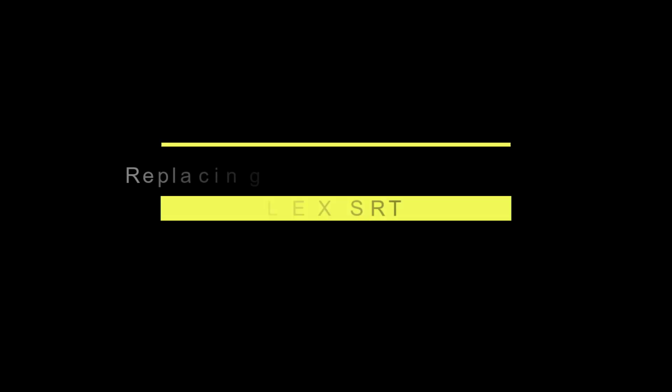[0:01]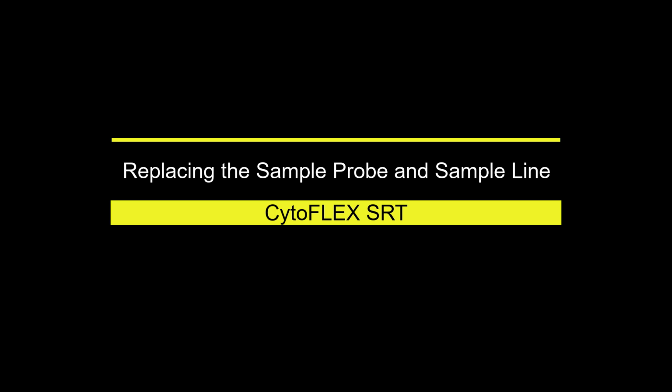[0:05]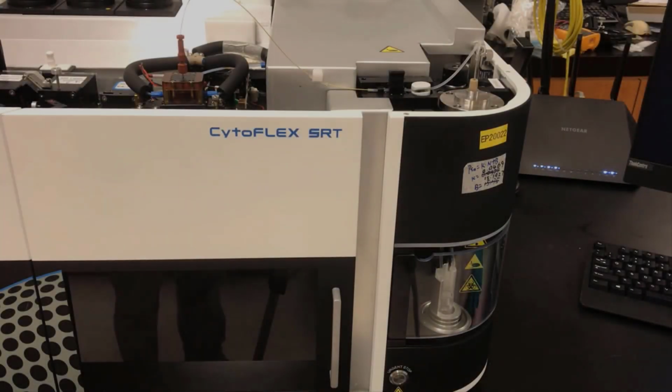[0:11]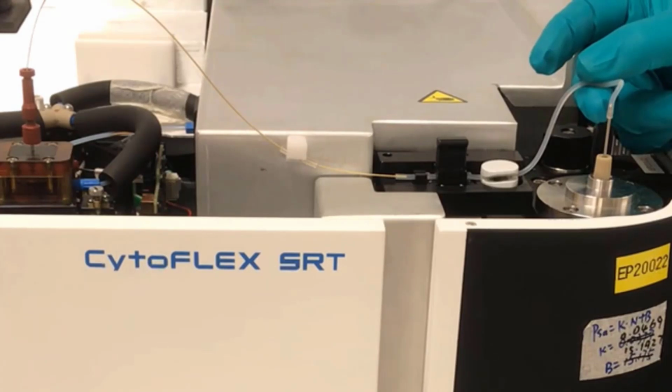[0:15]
This video will walk through replacing the sample probe and the sample line. The sample line has two sections. One section is silicone tubing. The other section is PEEK tubing, which is a hard tubing. The silicone tubing is soft. The soft tubing is used here because of the pinch valve that is used to open and close the sample flow to the flow cell.
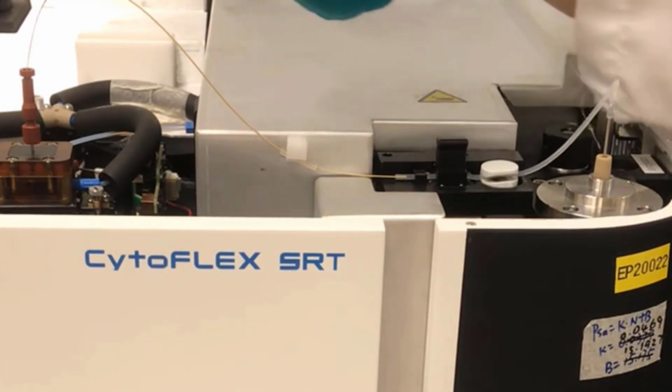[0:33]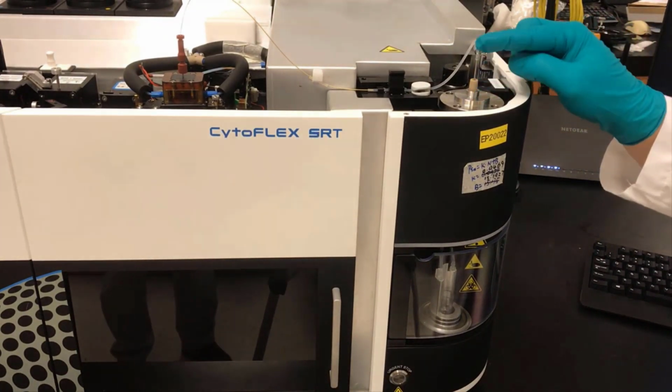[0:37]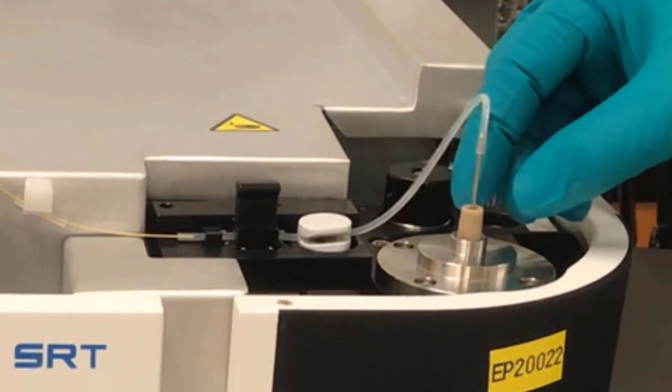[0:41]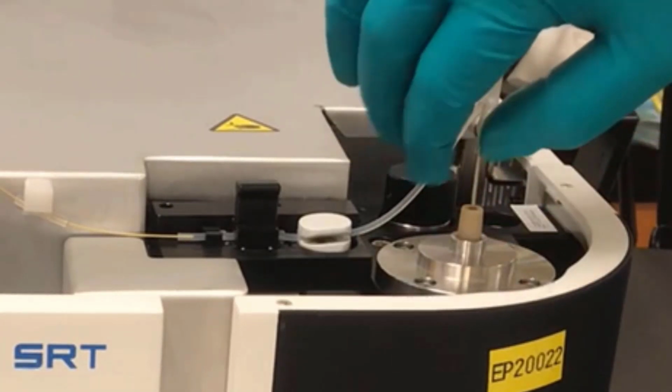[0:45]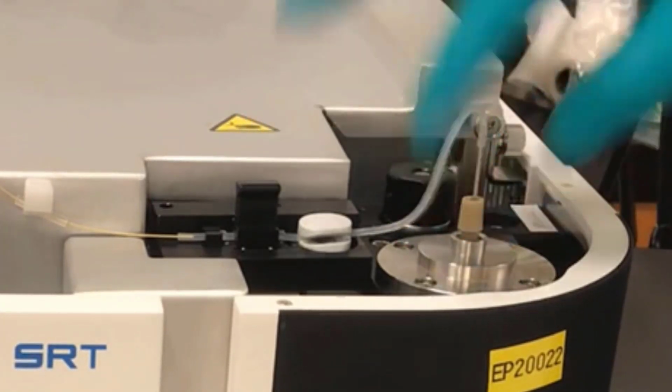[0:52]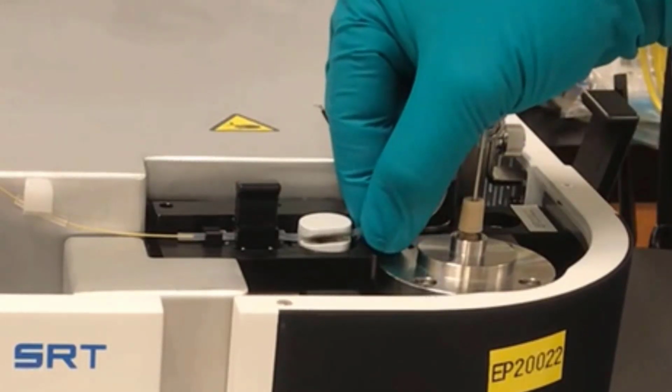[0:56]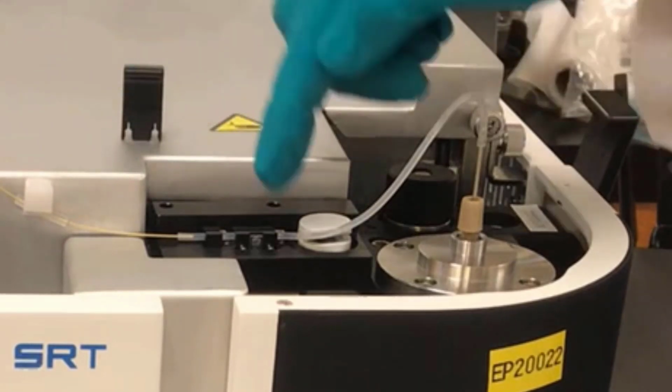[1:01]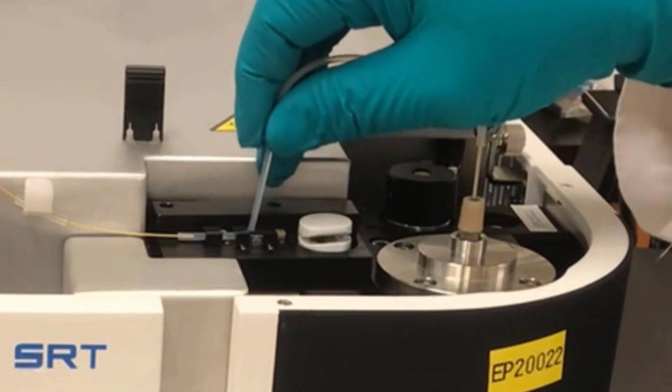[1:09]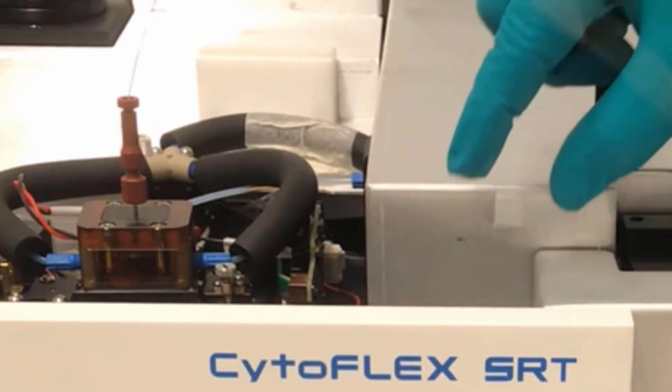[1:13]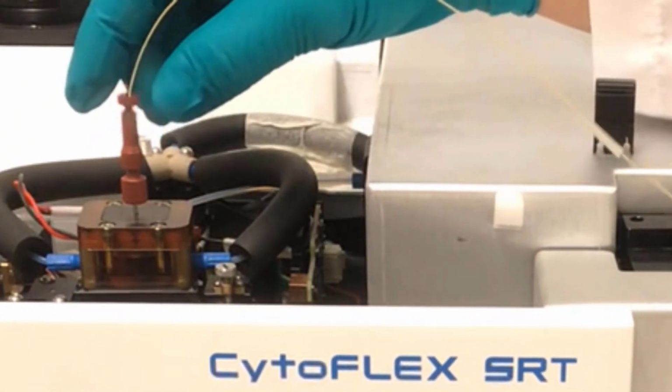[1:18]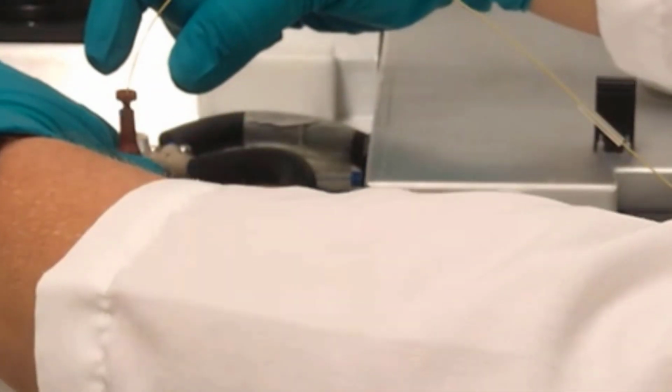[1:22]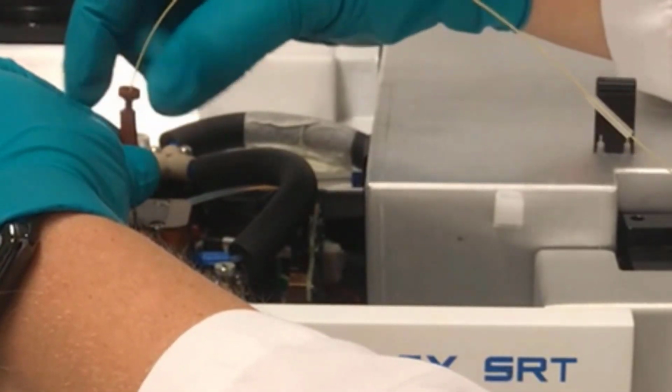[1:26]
Turn the gray finger tight fitting attached to the sample probe counterclockwise. Carefully pull the silicone tubing away from the sample line bubble detector and the pinch valve slot. Remove the sample line bubble detector cap. Hold the fitting adapter securely and turn the brown finger tight fitting counterclockwise to disconnect the PEEK tubing from the finger tight fitting adapter.
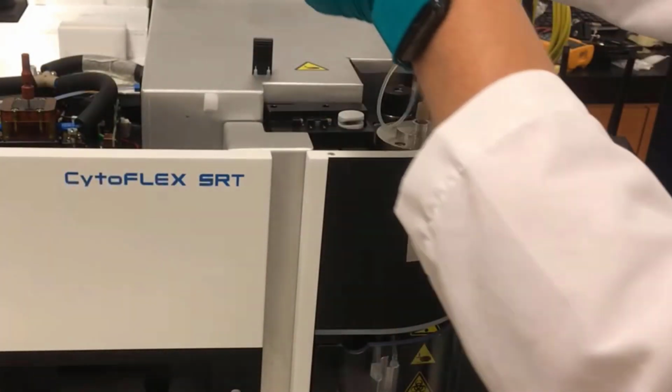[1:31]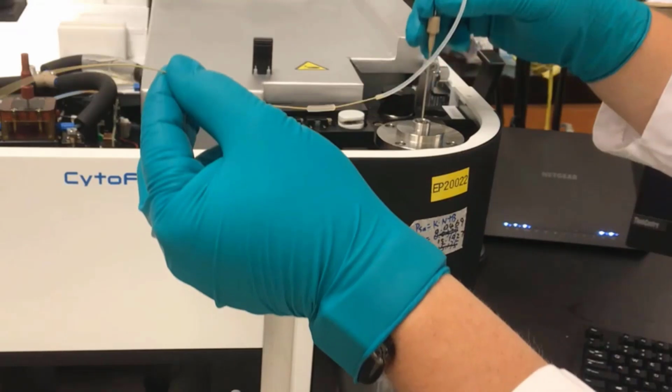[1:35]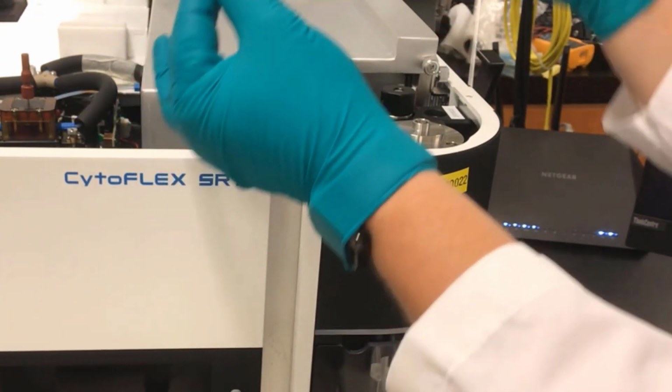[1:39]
Once the fittings and tubing are loose, you can now remove the sample probe. Slowly pull the sample probe upward until it is completely removed from the top plate. Go straight up and avoid bending the probe.
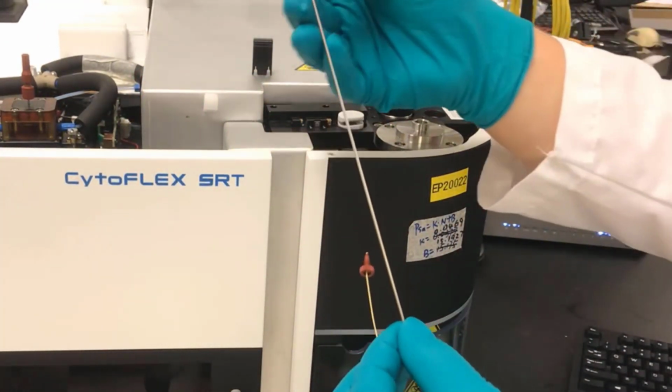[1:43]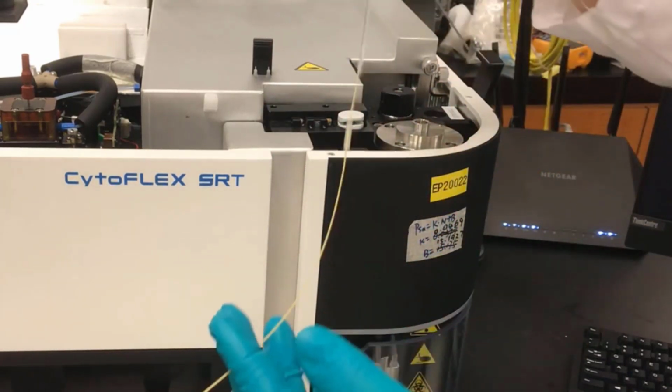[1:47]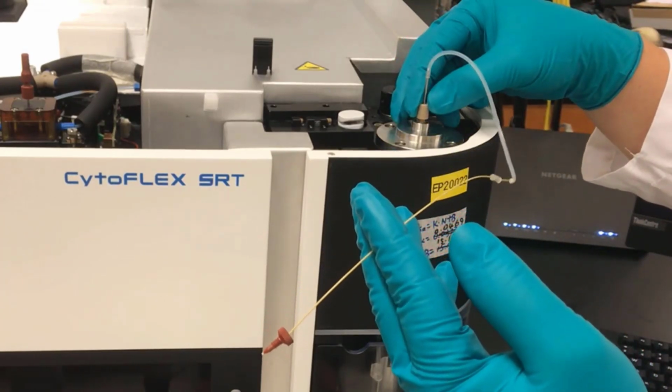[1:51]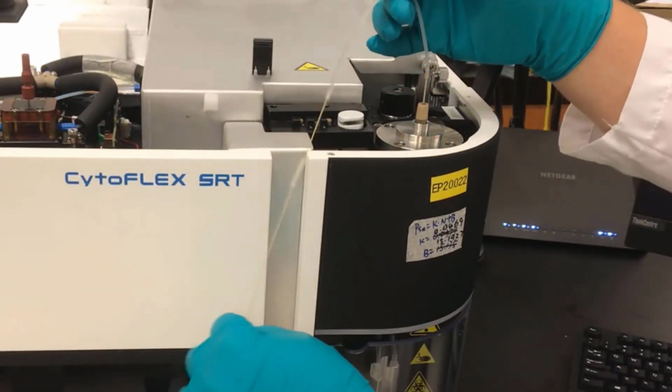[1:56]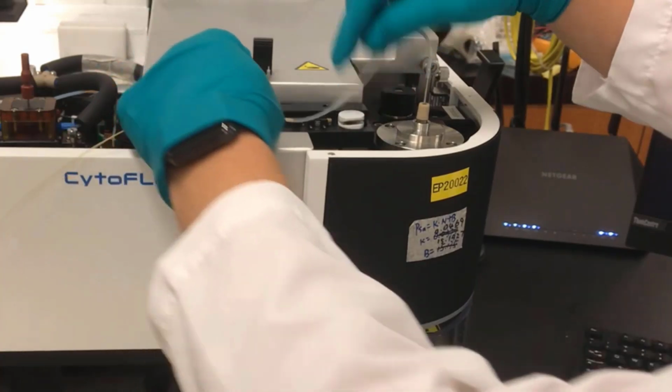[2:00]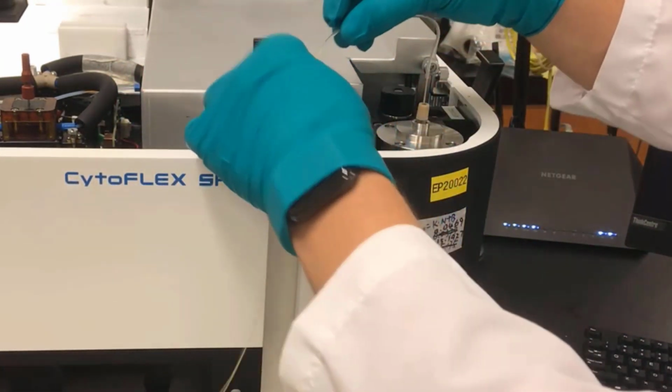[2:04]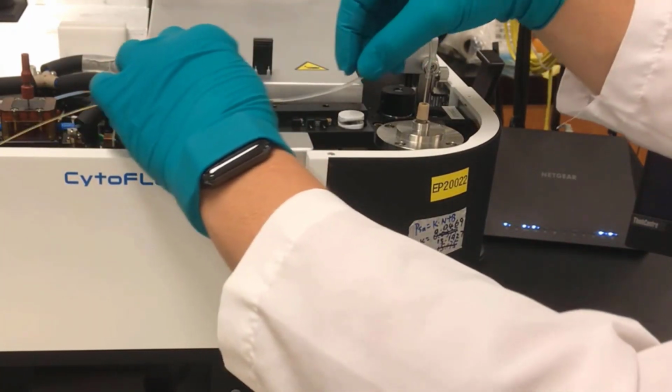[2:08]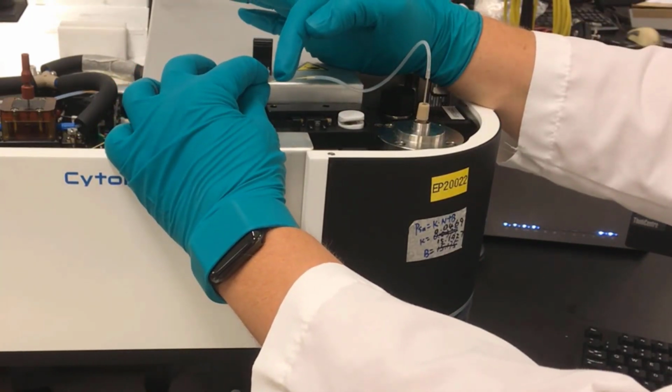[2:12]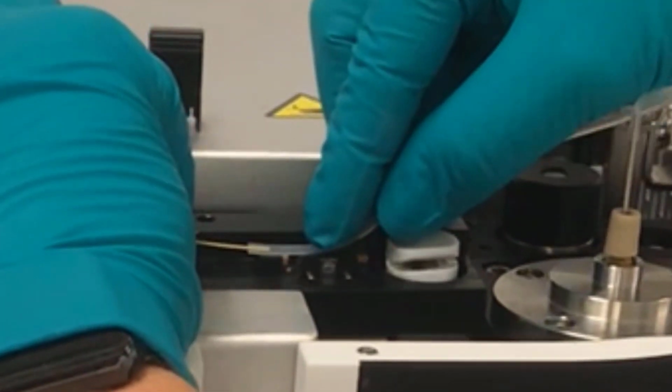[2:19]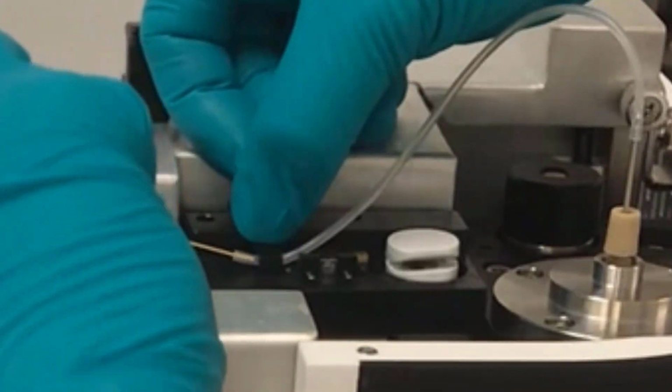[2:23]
To reinstall the sample probe and sample line, feed the new sample probe through the gray finger tight fitting. Feed the sample probe together with the finger tight fitting through the top plate. Route the silicone tubing through the pinch valve and the bubble detector. To know the exact placement of the tubing, the PEEK tubing end should be in the middle as shown in the picture. Otherwise, the sample flow rate may be inaccurate, and the bubble detector function may not work properly.
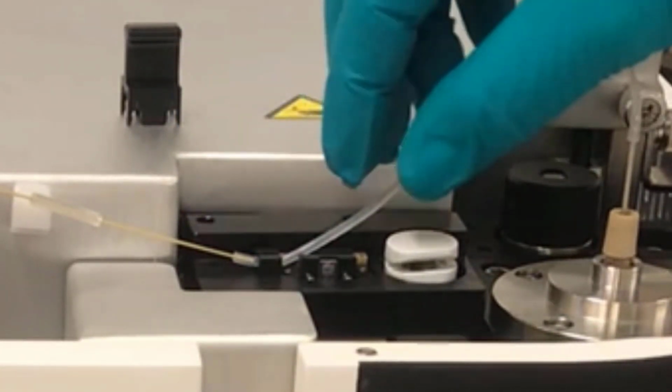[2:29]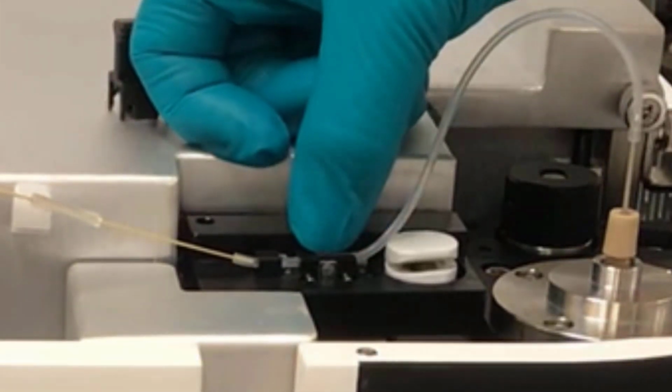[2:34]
Push the silicone tubing into the sample line bubble detector slot. You can use your finger or a non-sharp object to help you push the sample line down. It doesn't require too much force.
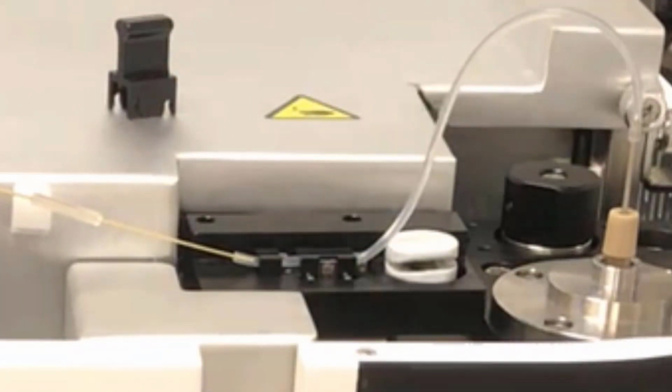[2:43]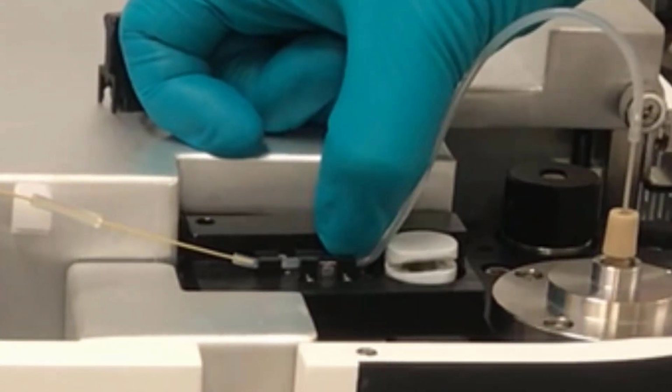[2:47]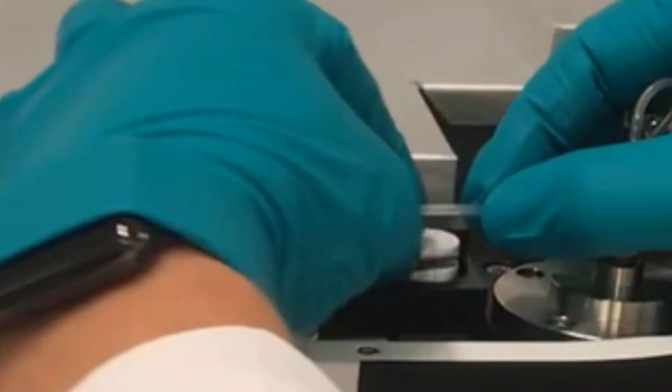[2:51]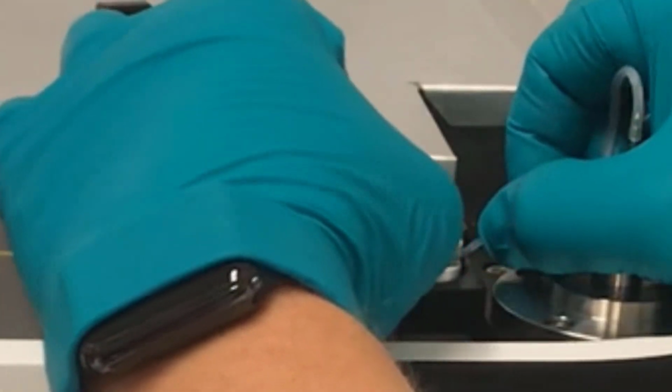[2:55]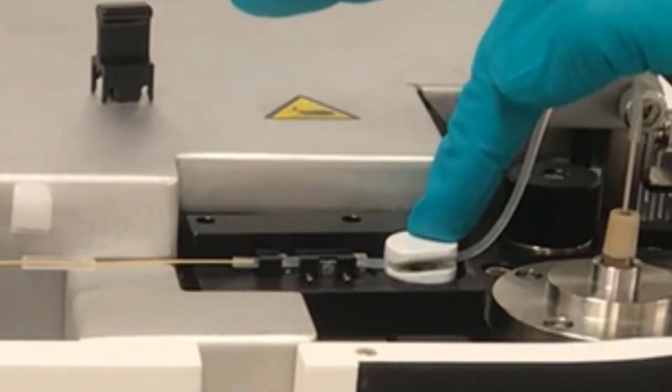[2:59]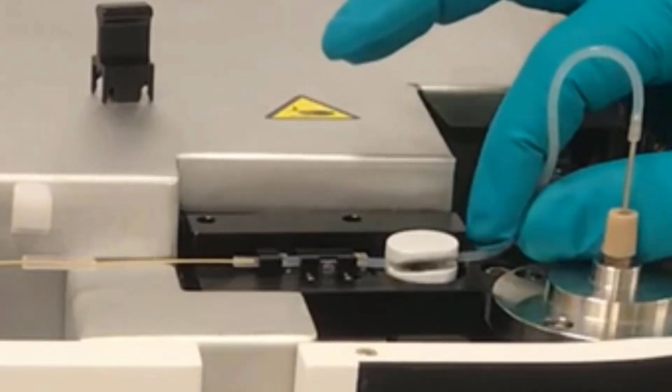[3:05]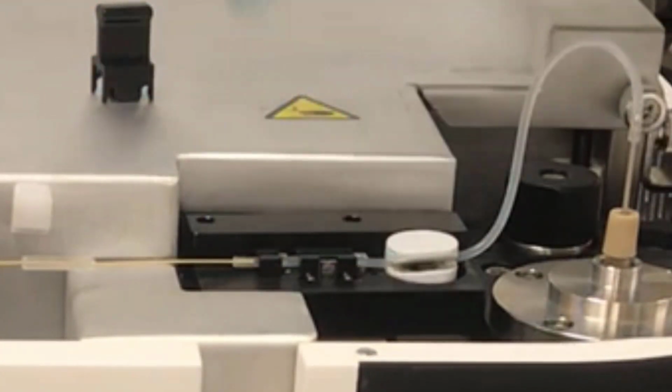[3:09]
Push the silicone tubing into the pinch valve slot. Ensure that the tubing is completely seated to the bottom of the slot so that the pinch valve functions properly. Check for and remove any kinks in the tubing. You can pull the sample line until you have a straight line. Reinstall the sample line bubble detector cap.
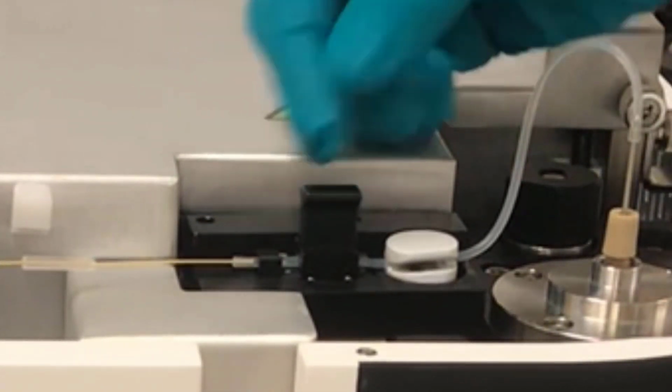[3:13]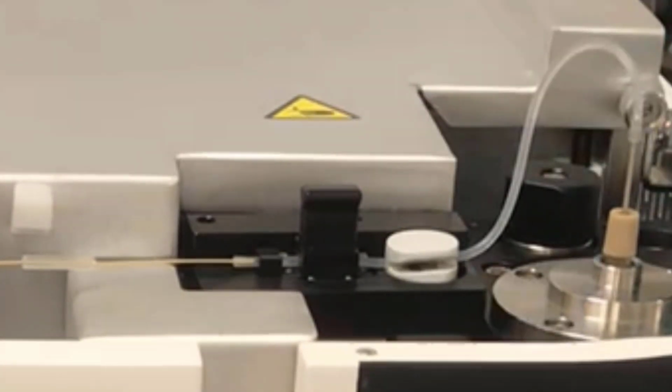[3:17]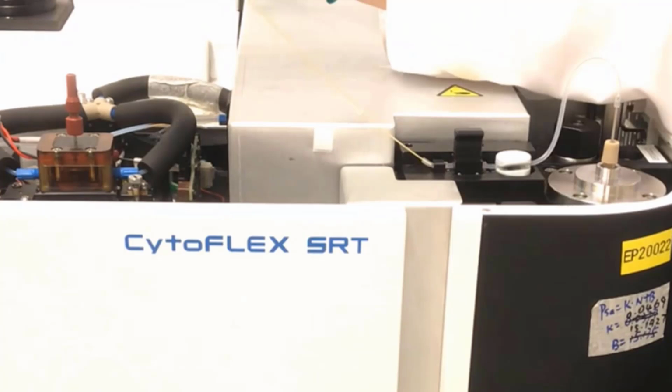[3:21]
Every time you replace the sample line or remove the silicone tubing from the sensor, you will need to calibrate the sample line bubble detector. This can be completed by all users and doesn't require service to complete it. Refer to Chapter 11, Calibrating the Sample Line Bubble Detector, to complete this procedure.
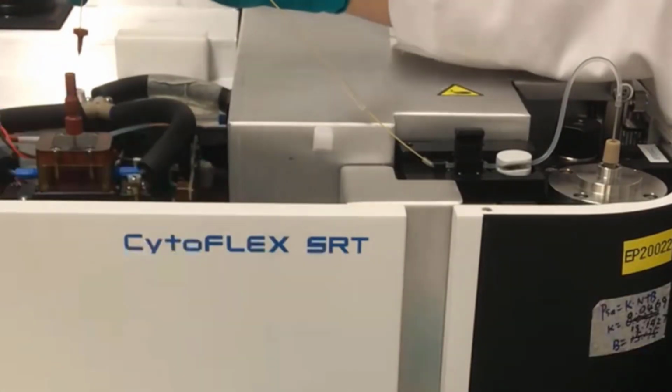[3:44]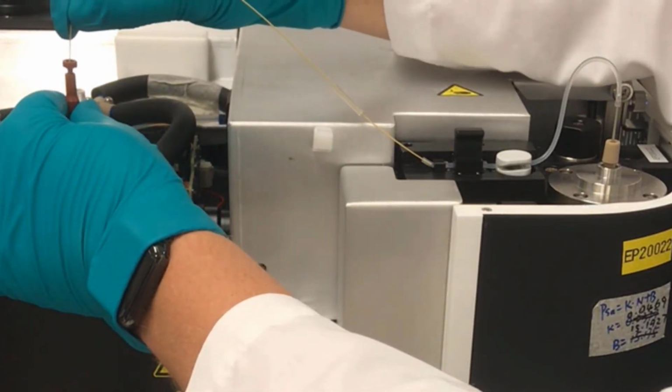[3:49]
We are now going to connect the PEEK tubing into the flow cell. Insert the PEEK tubing together with the finger tight fitting into the fitting adapter. Turn the finger tight fitting clockwise while pushing the PEEK tubing downward to its limit. Verify that the finger tight fitting is completely tightened.
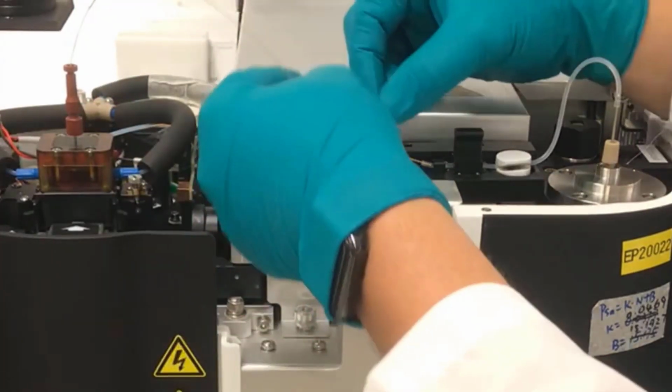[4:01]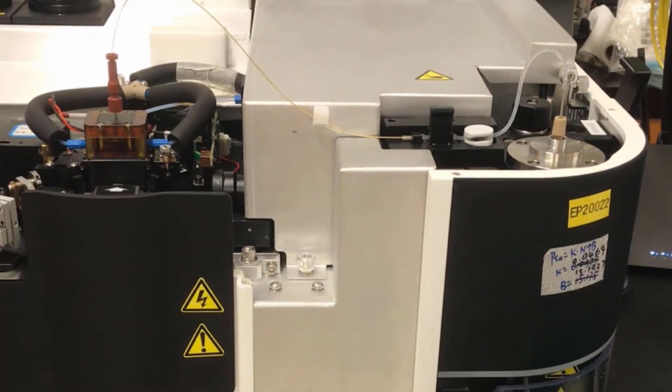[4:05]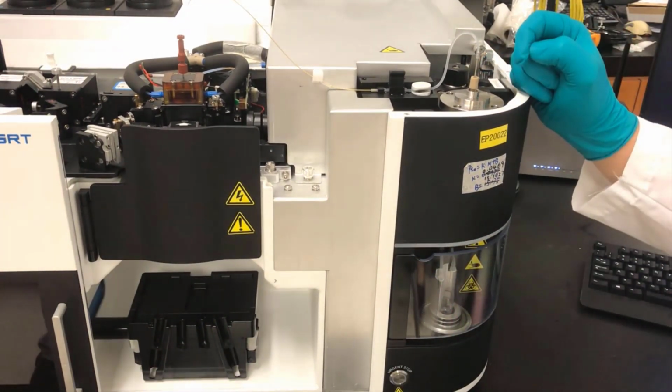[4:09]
The next step in replacing the sample probe is adjusting how deep the probe can go by adjusting the probe's height. Provided in the instrument package is the sample gauge. The sample gauge is used for height adjustment.
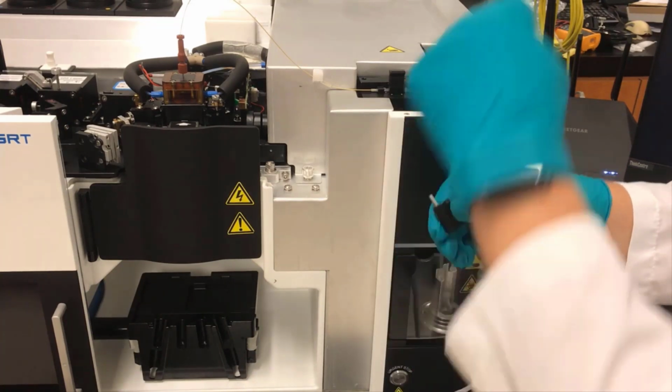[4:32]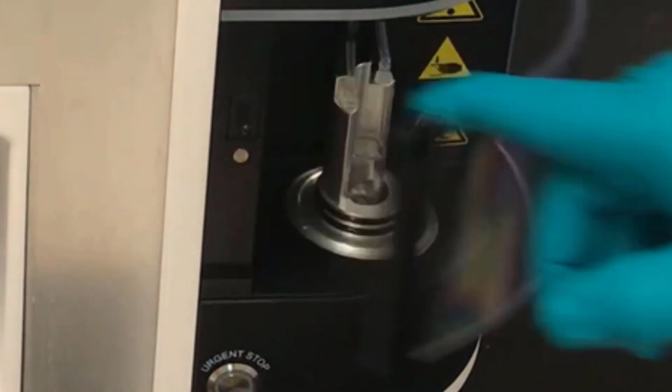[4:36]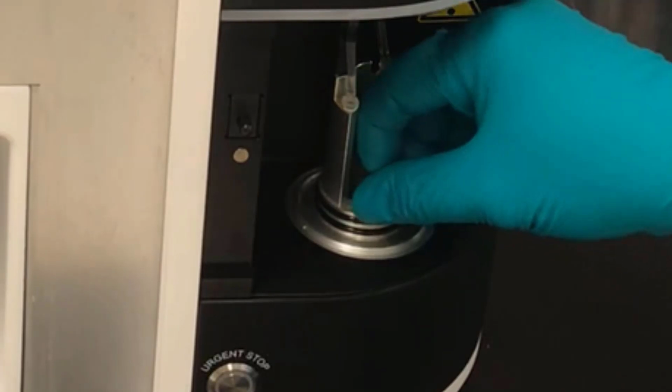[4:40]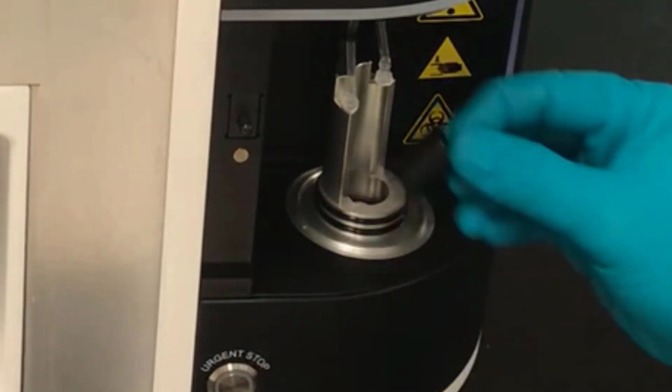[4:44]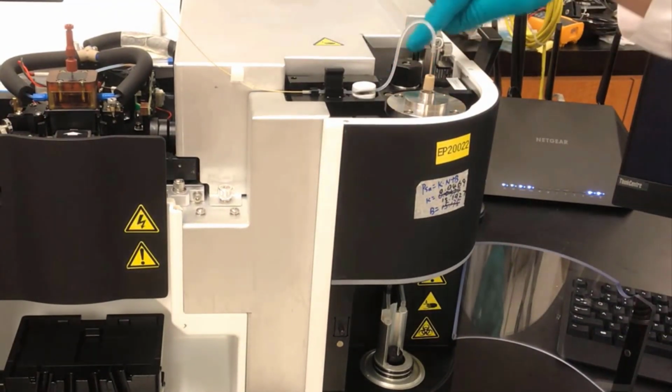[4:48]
Open the sample station door. Remove the tube holder from the sample station. Put the sample probe gauge vertically in the tube holder slot. Rotate the black thumb screw counterclockwise to move the chamber cover downward to its limit. As the chamber gets near the limit, go slowly to ensure the probe remains in the center and doesn't get stuck. Once the chamber has reached its limit, go all the way until you have a hard stop and then pull back the knob just a little bit.
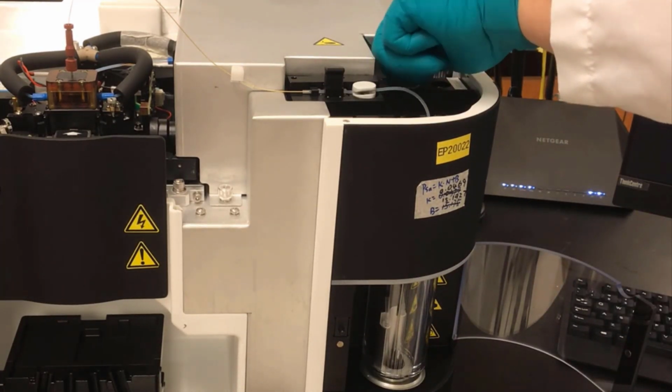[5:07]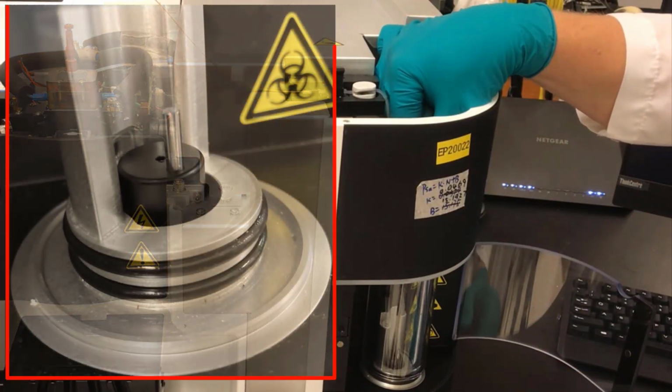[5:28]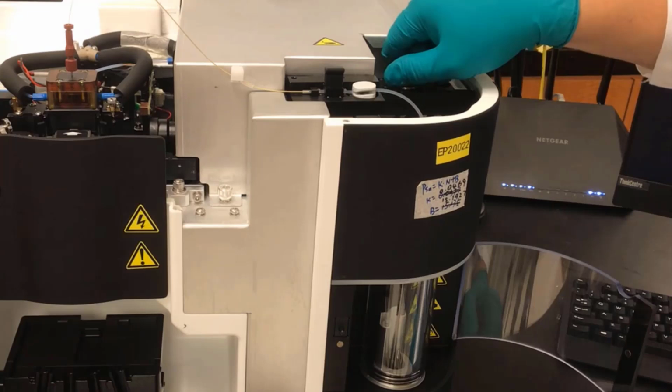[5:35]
Move the probe up and down to make sure that it is hitting the bottom of the sample gauge. You can see here that the probe is hitting the bottom of the sample gauge. At this time, tighten the fitting until you hear a click. Rotate the black thumb screw clockwise to move the chamber until the sample probe is slightly above the sample gauge. Then, slowly move the chamber up and down to make sure that the probe is not crashing the edge of the sample gauge. Repeat this process until the alignment is correct.
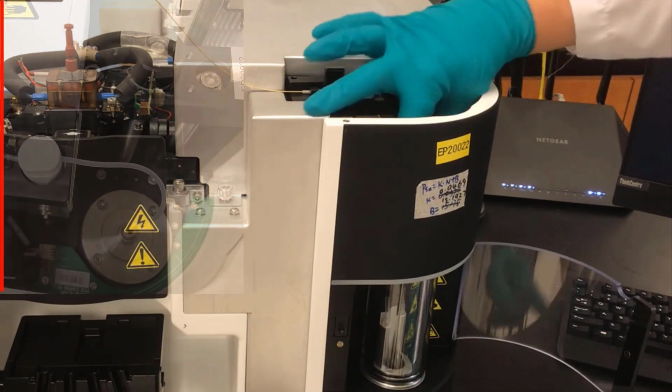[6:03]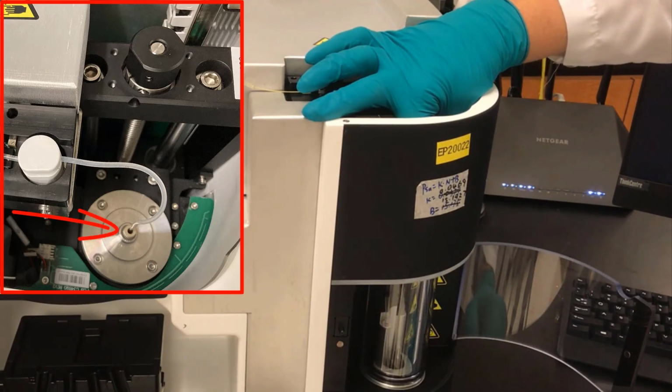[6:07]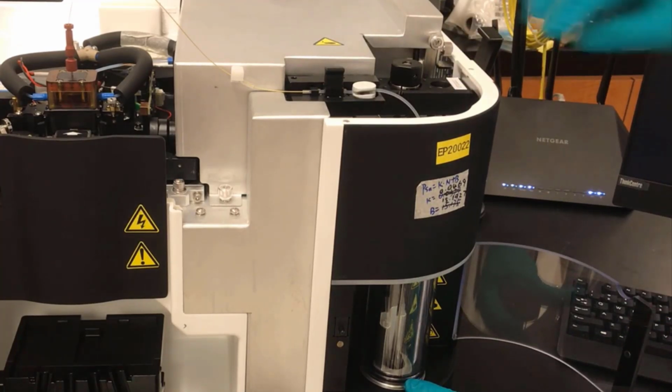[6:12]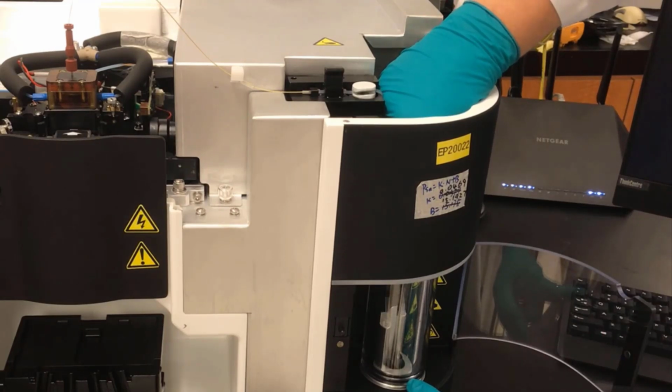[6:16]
Rotate the black thumb screw clockwise to move the chamber cover upward to its limit. Verify that the finger-tight fitting is securely tightened to the top plate. You will hear a click if the finger-tight fitting is tightened to its limit.
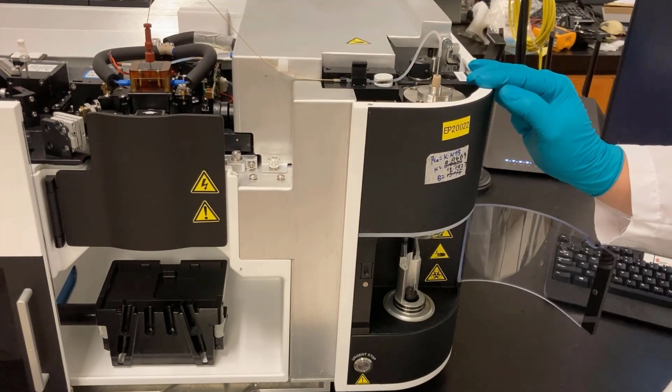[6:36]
Remove the sample probe gauge. The sample probe gauge contains a magnet that holds it in place, so it can be sticky at times. Put the tube holder back in the tube holder slot. Close the sample station door. The sample probe has now been replaced.